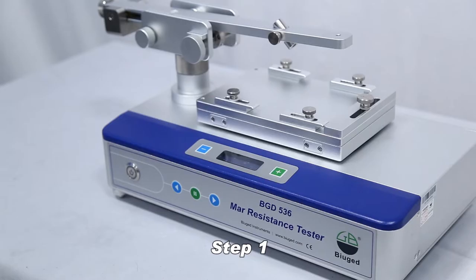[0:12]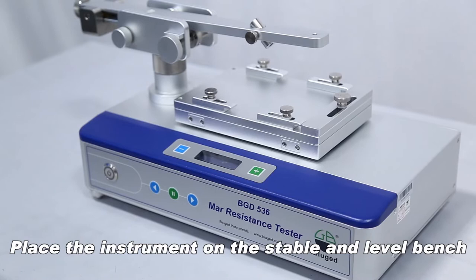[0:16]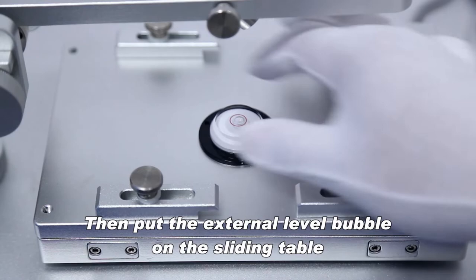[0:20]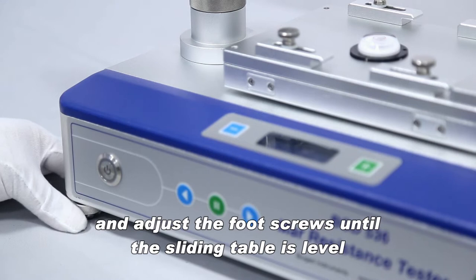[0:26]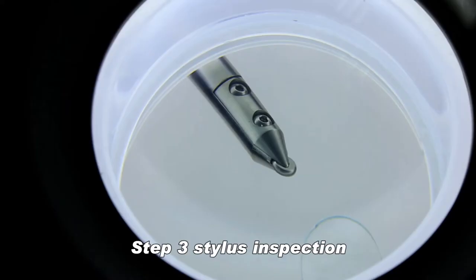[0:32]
Place the instrument on the stable and level bench. Then put the external level bubble on the sliding table, and adjust the foot screws until the sliding table is level. Plug in the power cord and connect the power supply.
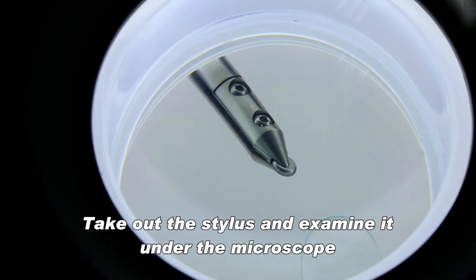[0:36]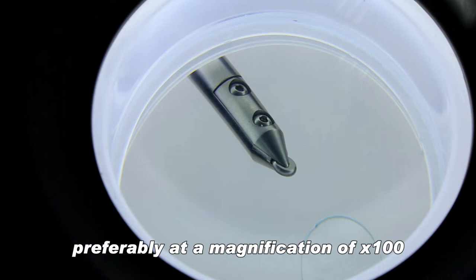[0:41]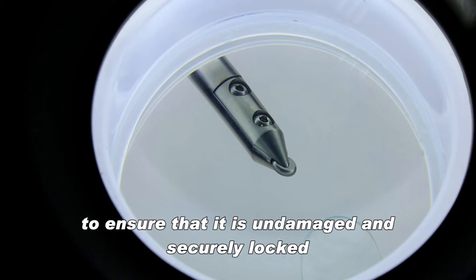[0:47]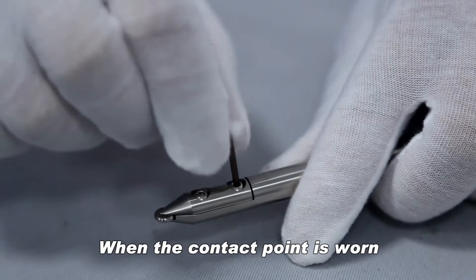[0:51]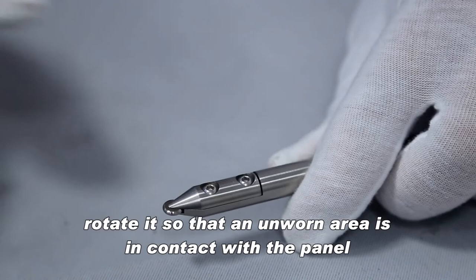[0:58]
Stylus inspection. Take out the stylus and examine it under the microscope, preferably at a magnification of x100, to ensure that it is undamaged and securely locked. When the contact point is worn, loosen the stylus compression screw with the supplied wrench. Rotate it so that an unworn area is in contact with the panel.
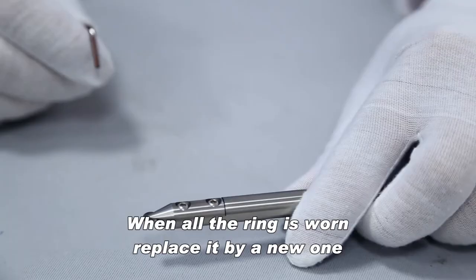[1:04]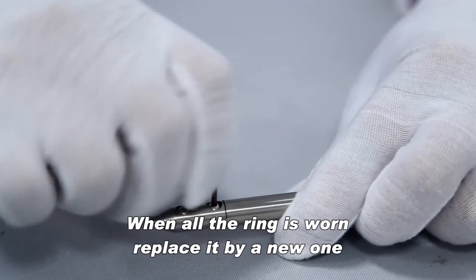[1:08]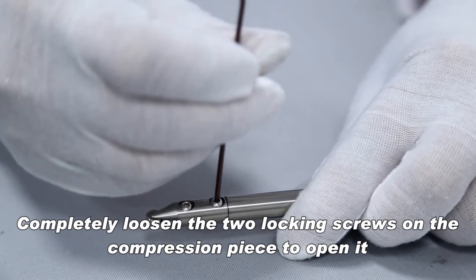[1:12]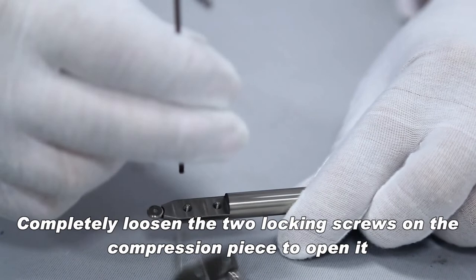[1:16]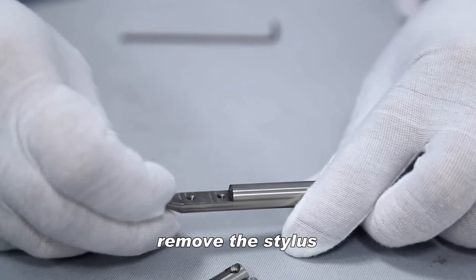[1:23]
When all the ring is worn, replace it with a new one. Completely loosen the two locking screws on the compression piece to open it. Remove the stylus and install a new stylus.
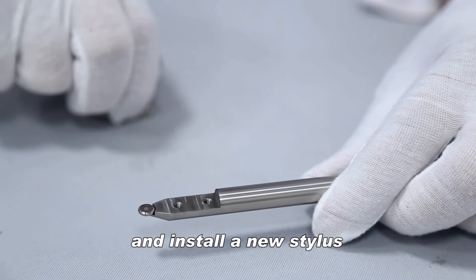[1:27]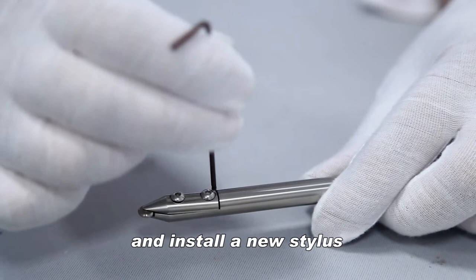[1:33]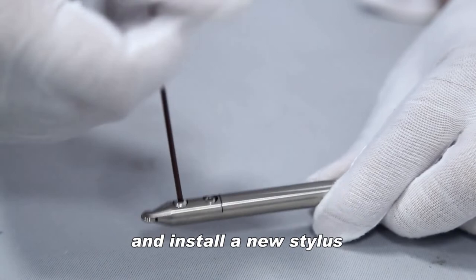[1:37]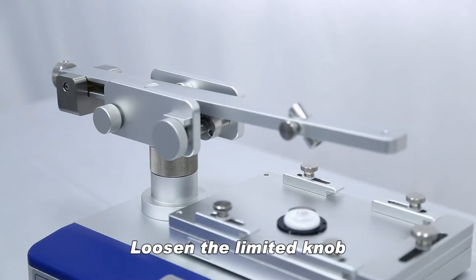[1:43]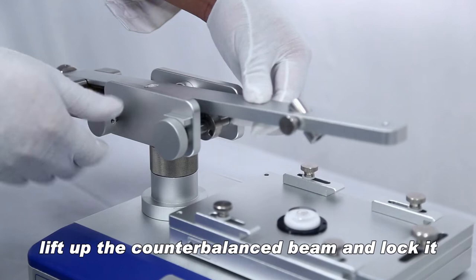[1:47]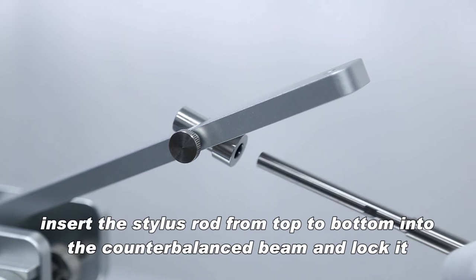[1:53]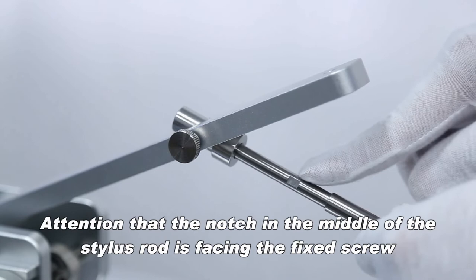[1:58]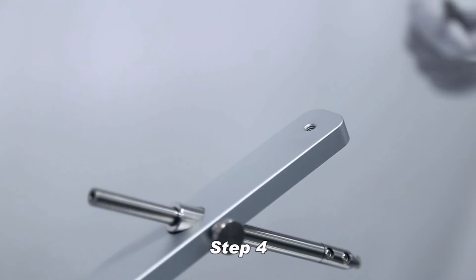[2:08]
Loosen the limited knob. Lift up the counterbalance beam and lock it. Insert the stylus rod from top to bottom into the counterbalance beam and lock it. Attention: the notch in the middle of the stylus rod must face the fixed screw. Install the weight holder and the gasket.
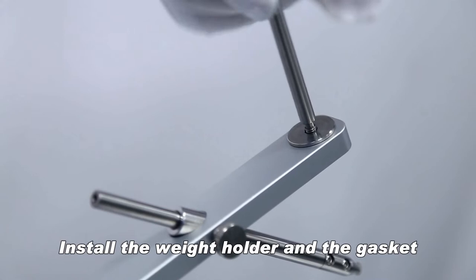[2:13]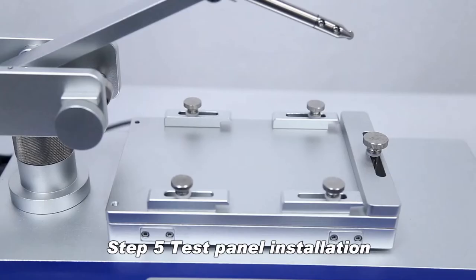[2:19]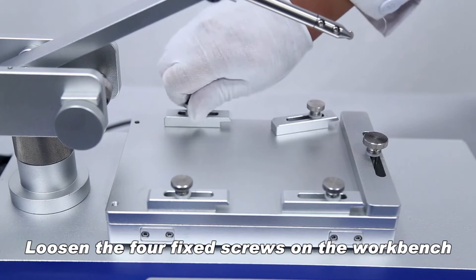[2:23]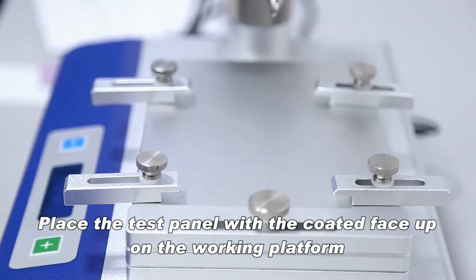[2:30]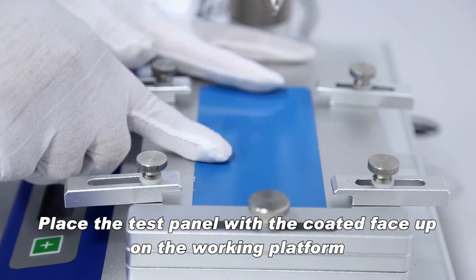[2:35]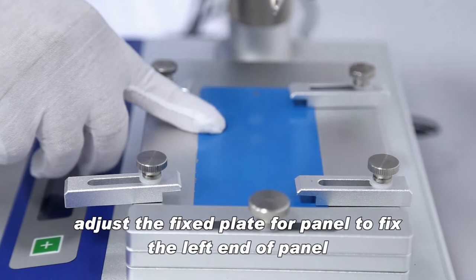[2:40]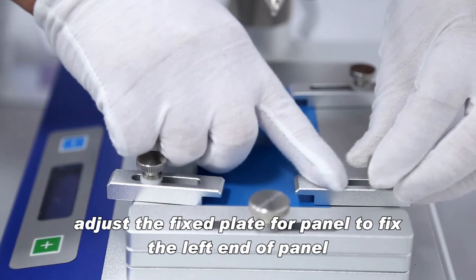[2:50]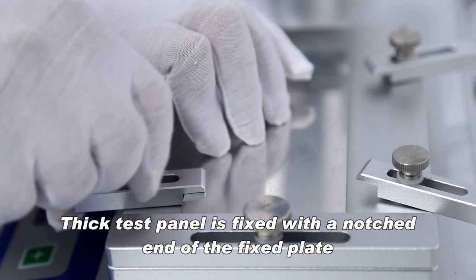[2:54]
Test panel installation. Loosen the four fixed screws on the workbench. Place the test panel with the coated face up on the working platform. The right end of the test panel is pressed against the right edge of the workbench. Adjust the fixed plate for the panel to fix the left end of the panel. A thick test panel is fixed with the notched end of the fixed plate.
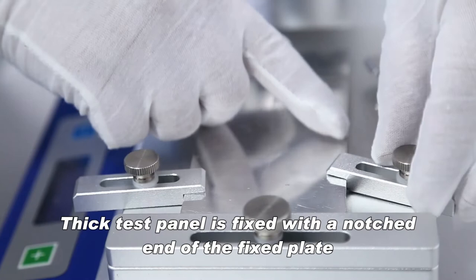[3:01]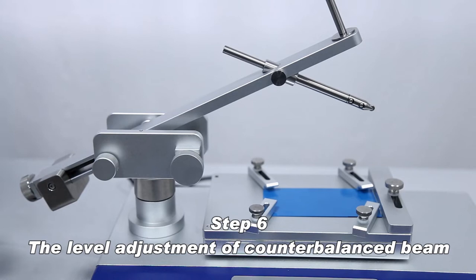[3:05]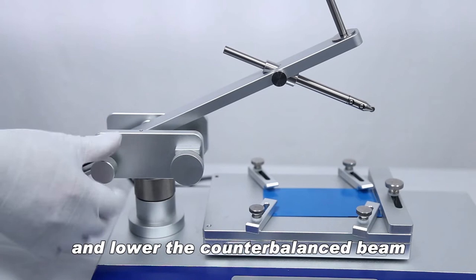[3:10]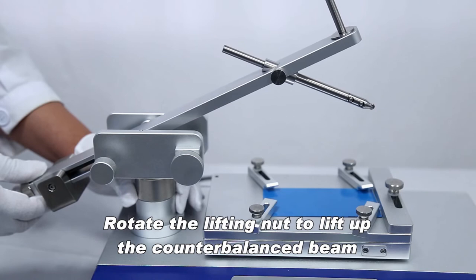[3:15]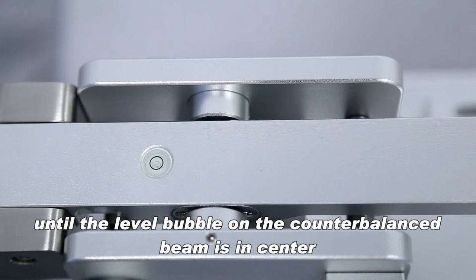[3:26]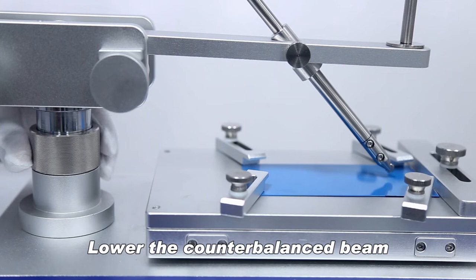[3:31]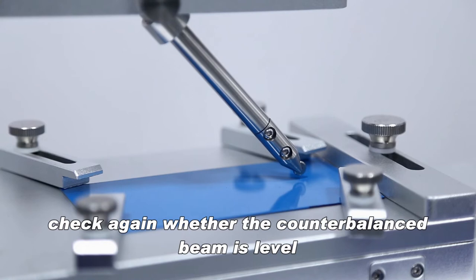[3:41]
The level adjustment of the counterbalance beam. Loosen the limited knob and lower the counterbalance beam. Rotate the lifting nut to lift up the counterbalance beam until the level bubble on the counterbalance beam is in the center. Lower the counterbalance beam until the tip of the stylus is just touching the surface of the test panel. Check again whether the counterbalance beam is level.
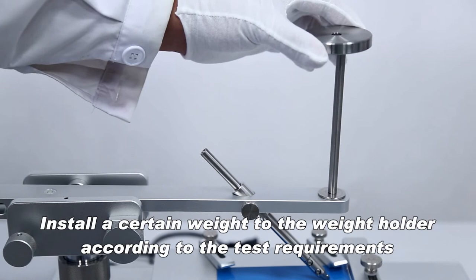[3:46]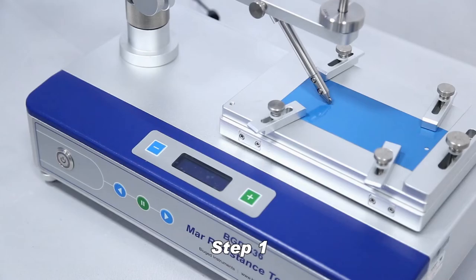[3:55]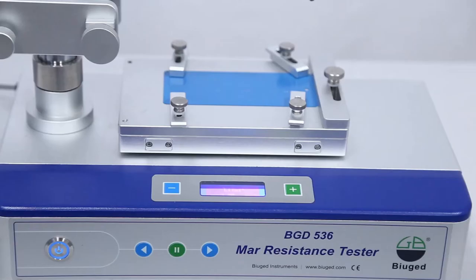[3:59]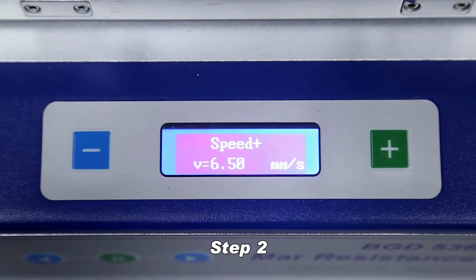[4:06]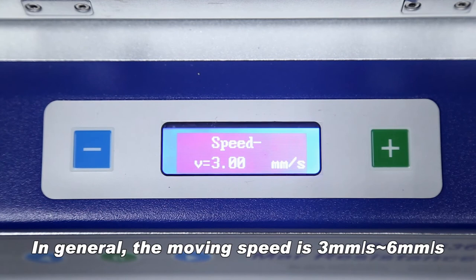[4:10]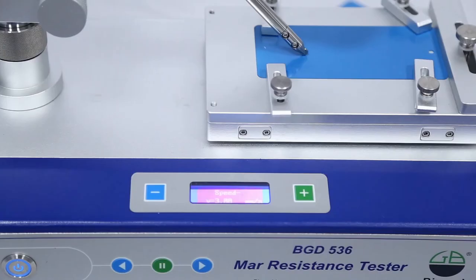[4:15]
Install a certain weight on the weight holder according to the test requirements. Turn on the power switch. Check if the work platform is at the far right. If not, press the button to reset the work platform. Press the plus and minus buttons to set the moving speed according to the test requirement. In general, the moving speed is 3 mm per second to 6 mm per second.
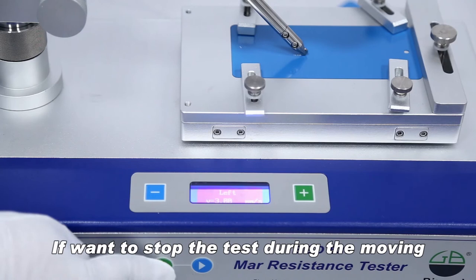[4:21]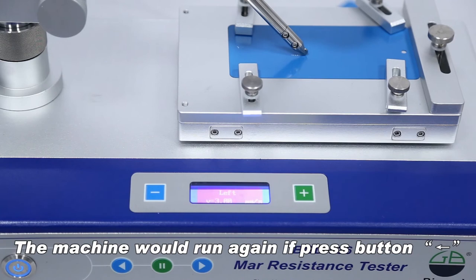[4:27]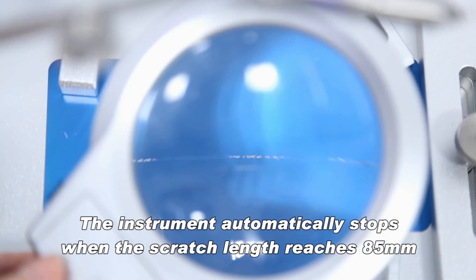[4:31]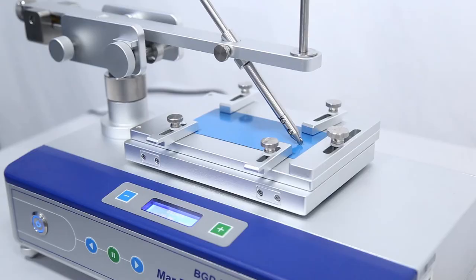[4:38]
Press the button to allow the scratch to be made on the coating. If you want to stop the test during the moving, press the button to stop it. The machine will run again if you press the button. The instrument automatically stops when the scratch length reaches 85 mm. Inspect the coating for scratching under a suitable magnification or with the naked eye.
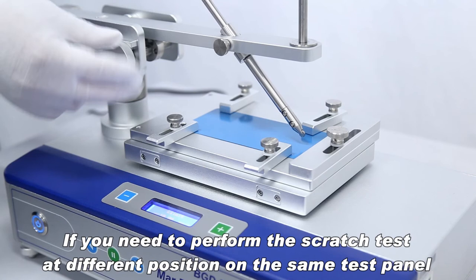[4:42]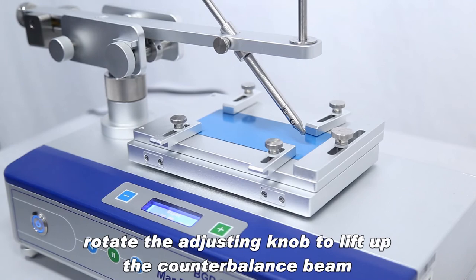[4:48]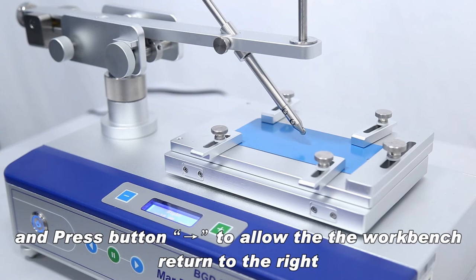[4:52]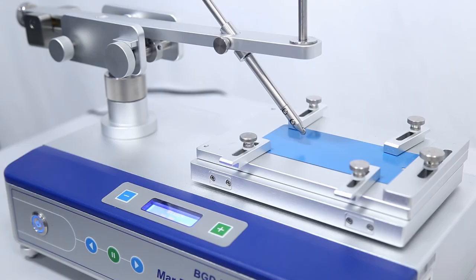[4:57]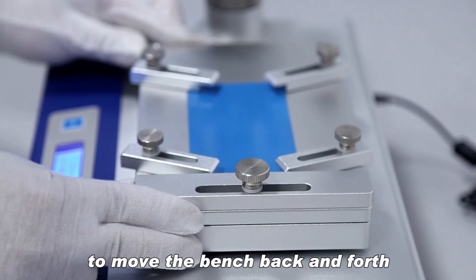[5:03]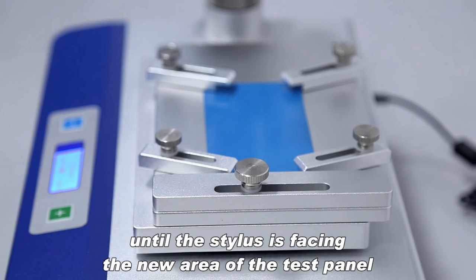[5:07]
If you need to perform the scratch test at a different position on the same test panel, rotate the adjusting knob to lift up the counterbalance beam, and press the button to allow the workbench to return to the right. Loosen the fixed screw for the holder on the right end of the workbench. Move the bench back and forth until the stylus is facing the new area of the test panel, and do the scratch test again.
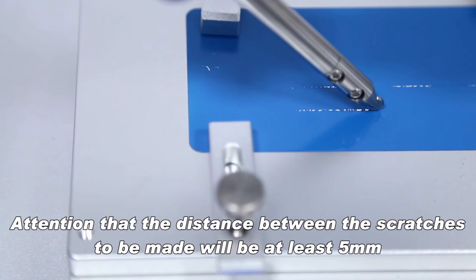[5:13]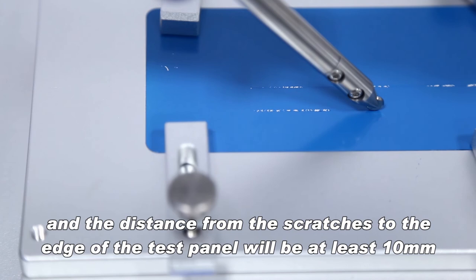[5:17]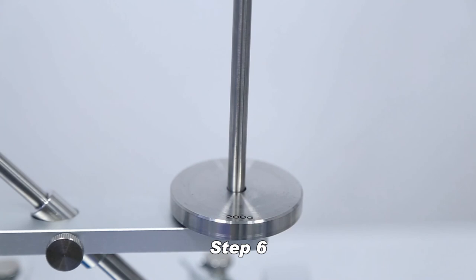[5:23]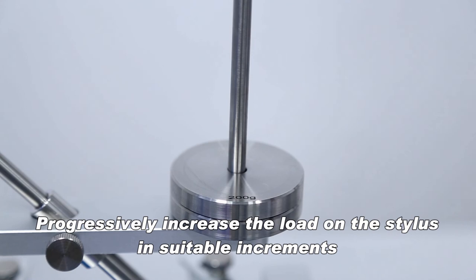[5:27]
Attention: the distance between the scratches to be made must be at least 5 millimeters, and the distance from the scratches to the edge of the test panel must be at least 10 millimeters. To determine the minimum load to cause penetration, progressively increase the load on the stylus in suitable increments until the coating is penetrated.